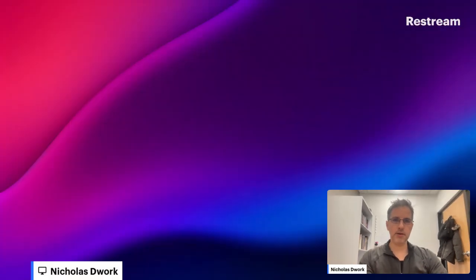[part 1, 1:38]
Good morning. I think we're streaming again. Today we're not going to make huge changes. Today I think we're just going to add in the checks, get ready to make the regularization term a constraint rather than a term in the objective function, and that's all we're going to do, if we get that far.
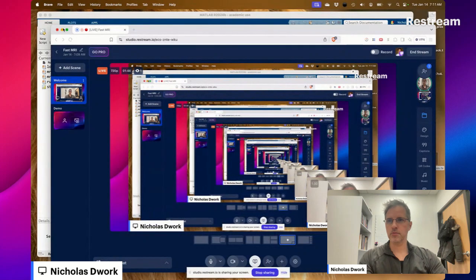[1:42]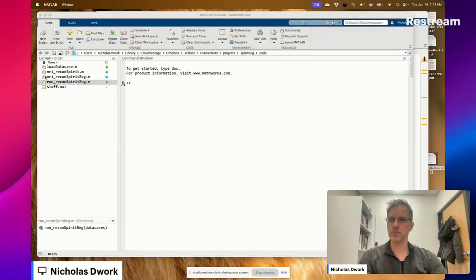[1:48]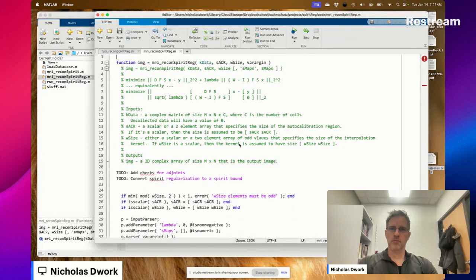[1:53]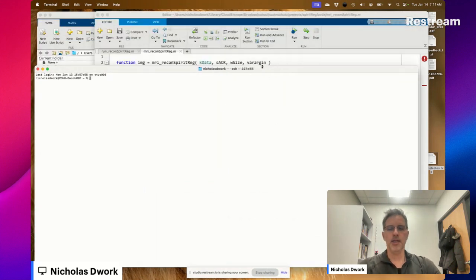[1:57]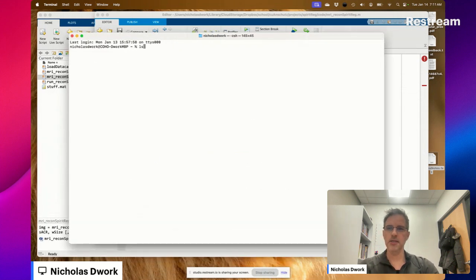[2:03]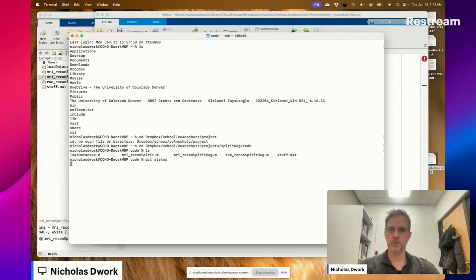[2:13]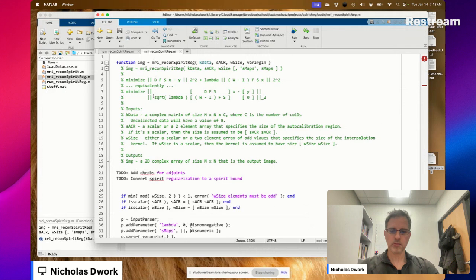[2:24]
So here's, let's make sure, I did want to make sure that I checked in those changes that we've been working on. Okay. They're checked in. So what we're moving to is the following problem. Minimize
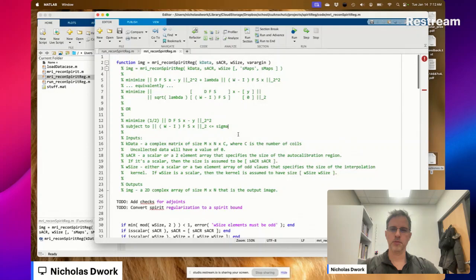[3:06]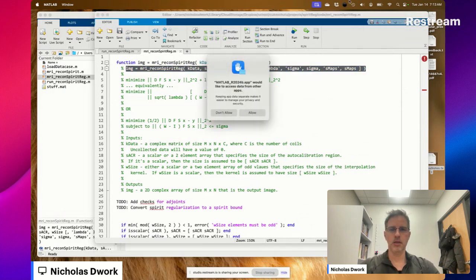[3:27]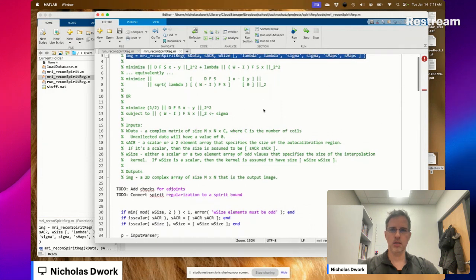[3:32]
Where's lambda? It's a parameter that starts out as 0. Now here, the question is, there's a question with sigma. What's the question? Right now, sigma is set. So it's the L2 norm of all the data in K-space across all coils.
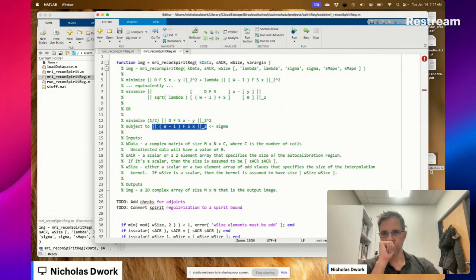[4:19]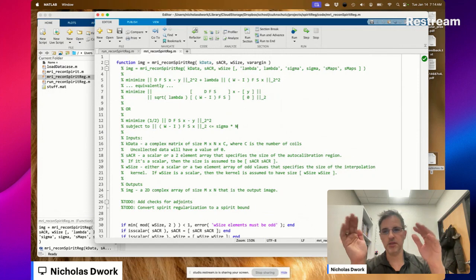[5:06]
So firstly, perhaps we should have a different sigma for each coil. That's a generalization of this optimization problem that I've put here. And maybe we'll do that, but we'll do that later. Secondly, maybe sigma should be a value such that if n were the number of pixels across all coils, then we would multiply sigma by n. I just don't know. We're going to leave it as sigma for now.
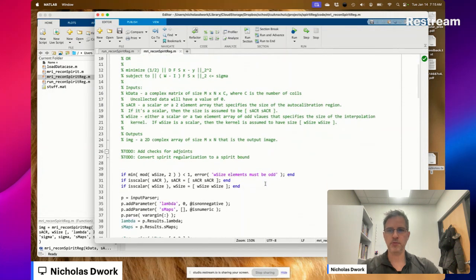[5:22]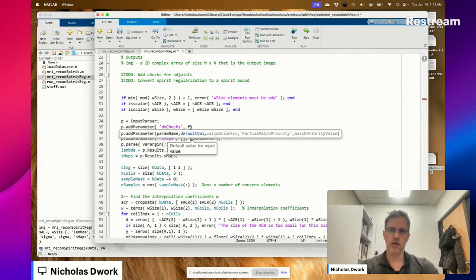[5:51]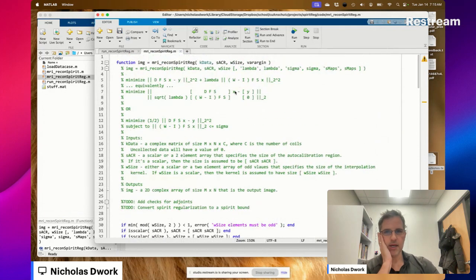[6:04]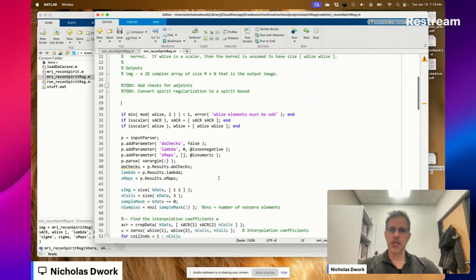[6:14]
So this is what we're working towards. We want to be able to solve this problem. But we're going to start by adding checks in for the adjoints. So let's add that parameter value. Like before in MRI Recon SPIRiT, I'm not going to put do checks in the usage. It's just a hidden parameter that you and I can use and anyone who reads the code can use, but we're not going to advertise it.
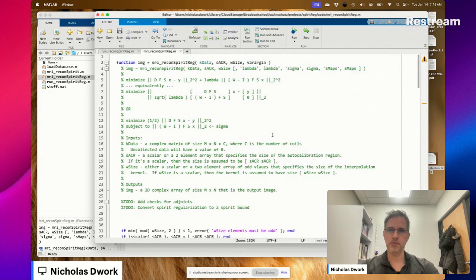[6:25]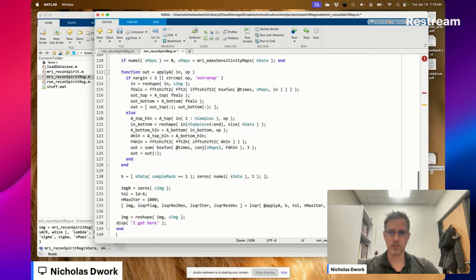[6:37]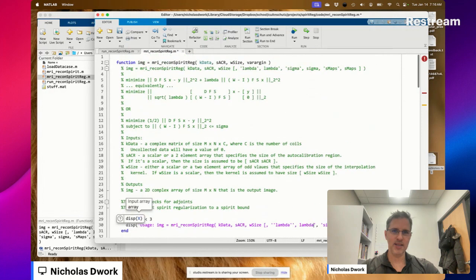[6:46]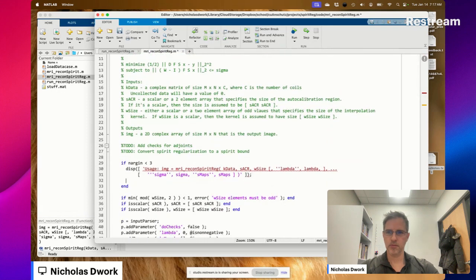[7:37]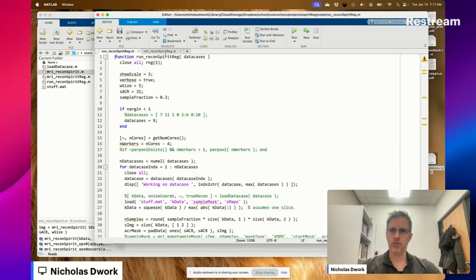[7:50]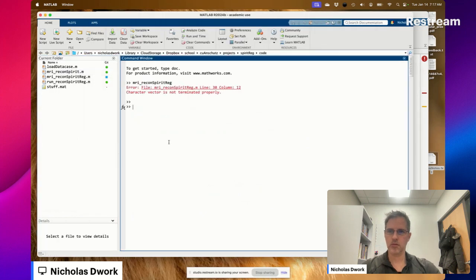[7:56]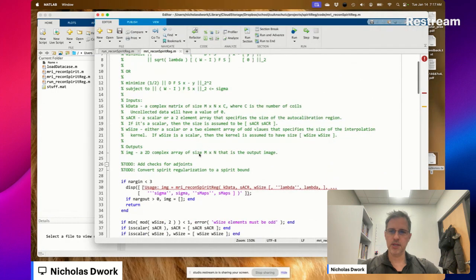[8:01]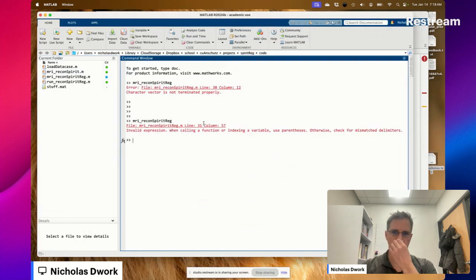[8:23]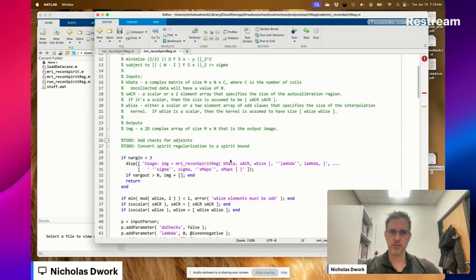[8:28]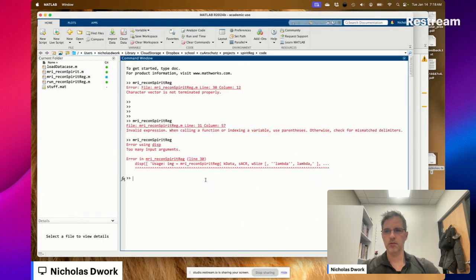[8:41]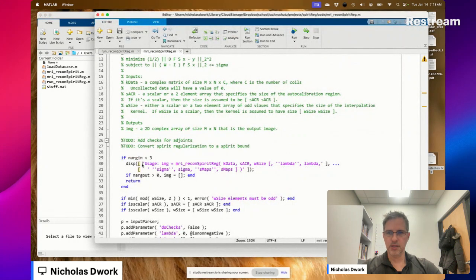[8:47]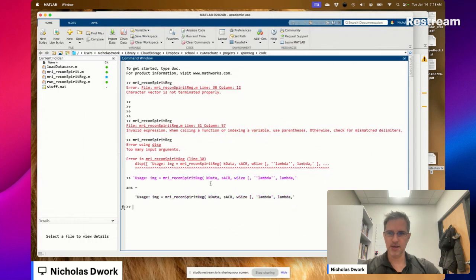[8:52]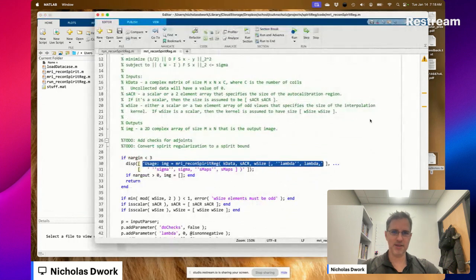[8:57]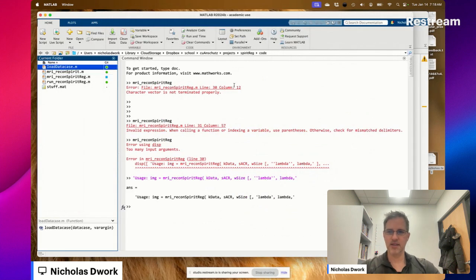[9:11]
I don't know how I went down to the bottom of the page all of a sudden. Character vector is not terminated properly. It's early in the morning, folks. Early in the morning. Too many input arguments. Is this a thing? Okay, that seems to be an actual character array. There we go. Oh boy.
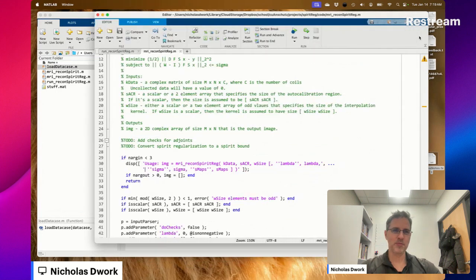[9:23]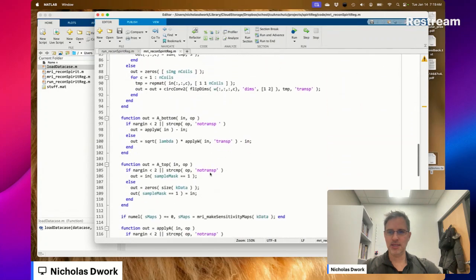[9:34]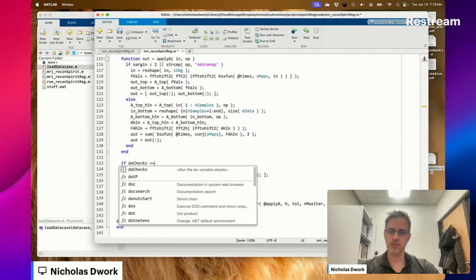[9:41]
Well, we've added some code that we will check in at some point. We've got doChecks here. Let's do some checks. Now you might say, why are we doing these checks? Didn't we see that it was working last time? Well, we saw that it gave a good result, but as we've already seen during these streams, you could get a good result even though the code's not really working, which is scary.
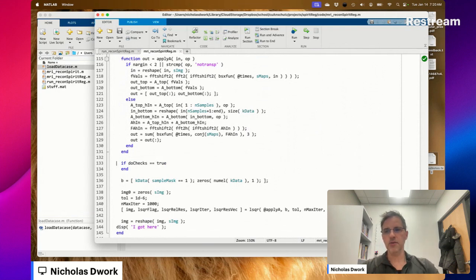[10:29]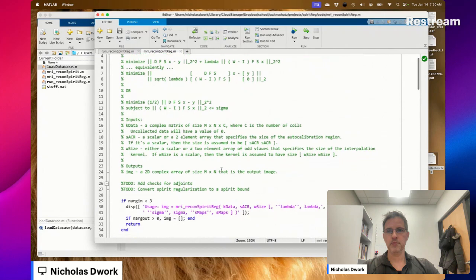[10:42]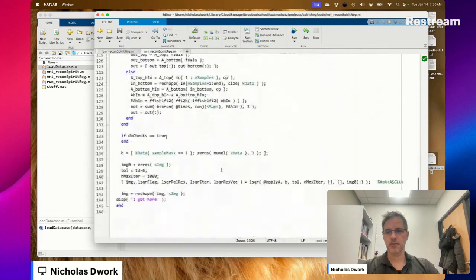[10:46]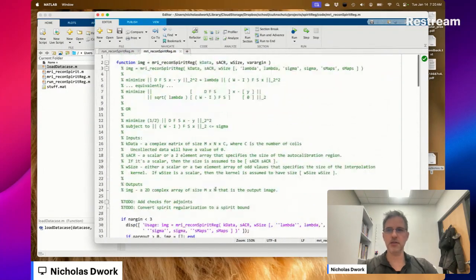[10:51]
So one thing is that do checks is going to help us, it's just a nice thing to do. It takes almost no computation to do the checks. When we're not using it, we turn it off. It's just one if statement. It builds my confidence in this code, my code. And then also we're going to be altering this code substantially. And so when we do that, we're going to want to make sure that these checks are set up and that as we alter the code, the checks keep running and that things keep checking out. That's why we're doing it.
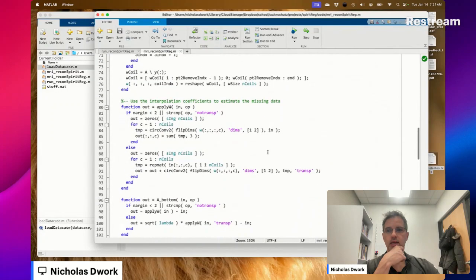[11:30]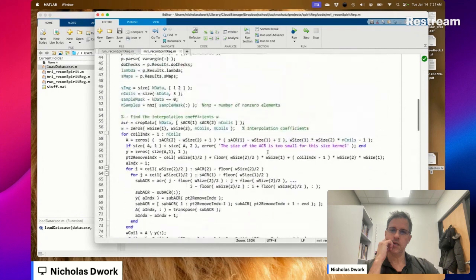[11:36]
Before we do that, I realized last night I want to do this, what I'm about to do now, is closer to what the code is actually doing. The FS is outside here. So this problem is equivalent to this one, and this one that's highlighted now is actually what the code is doing because we have broken this FS out of this block matrix, and it's really this block matrix now that's A, I think. Nope. This is still in A. So A is the block matrix with the FS, and then this is A top, and this is A bottom. So that's good.
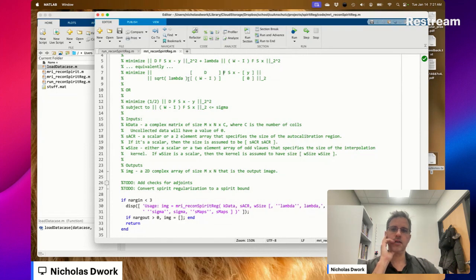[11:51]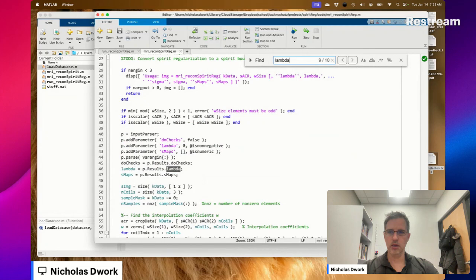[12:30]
The square root of lambda out here makes it seem like we're multiplying the entire block matrix. When we're not really doing that, we're just multiplying what's on the inside. So that's better still. On the inside, on the bottom, we're just multiplying the term on the inside that's on the bottom. Square roots are actually surprisingly expensive. Might as well just calculate it once, store it in memory, and then never do that again.
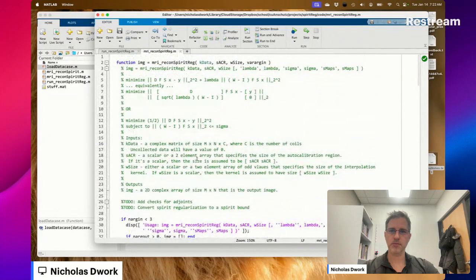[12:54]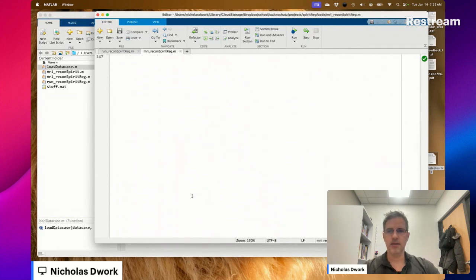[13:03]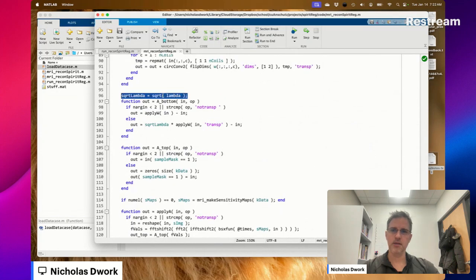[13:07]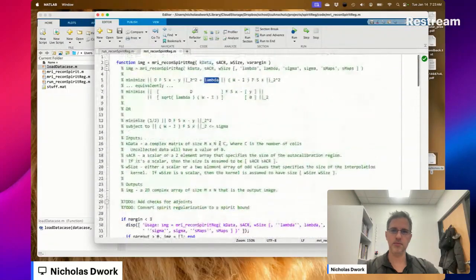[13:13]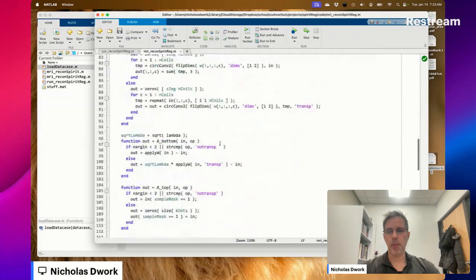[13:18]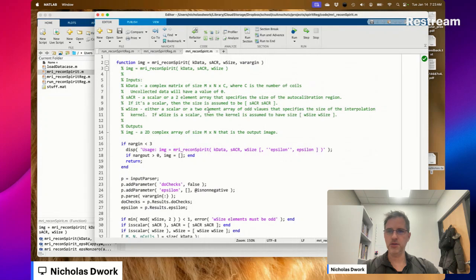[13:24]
All right. You might say, why not just have people pass in square root of lambda instead of lambda? We could do that. These are super fast computers. We're used to thinking about the regularization parameter as lambda, so that's what we're going to do. Okay. Back to do checks. So we've got do check for W. Do we have an SK data? I forget. No.
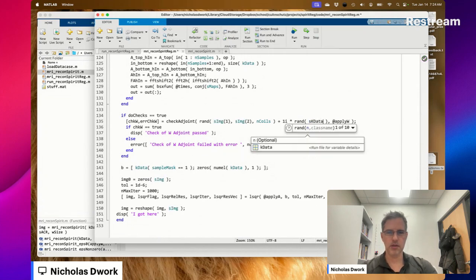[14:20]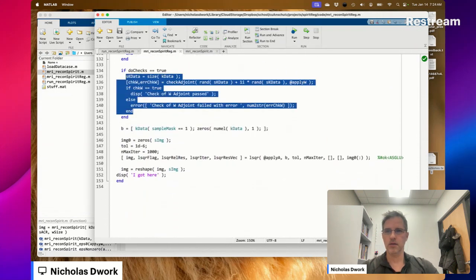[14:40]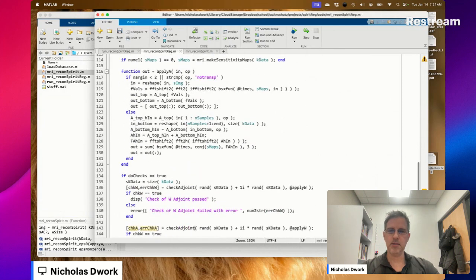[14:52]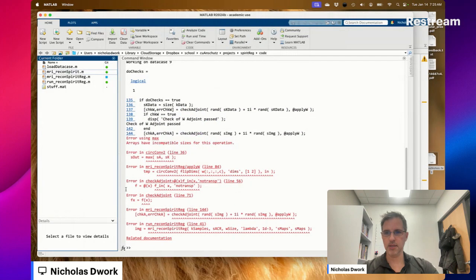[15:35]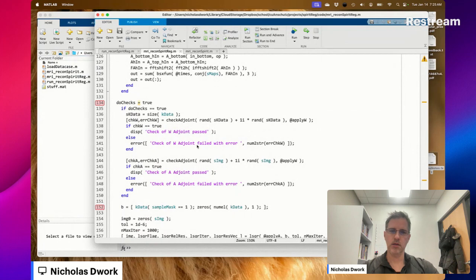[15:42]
What does A accept? A accepts S, which is size image. Does do checks work? That passes, that crashes. Failed. Looks like we've got a bug, doesn't it?
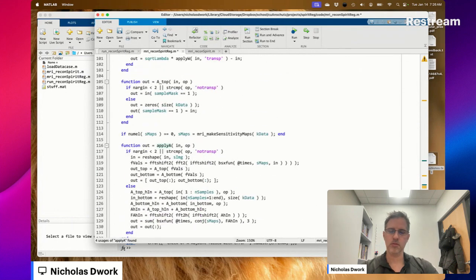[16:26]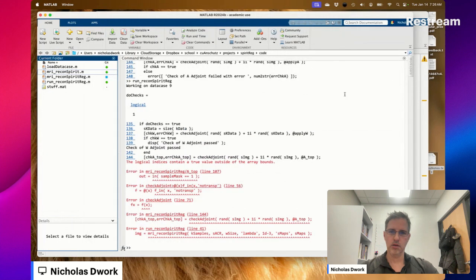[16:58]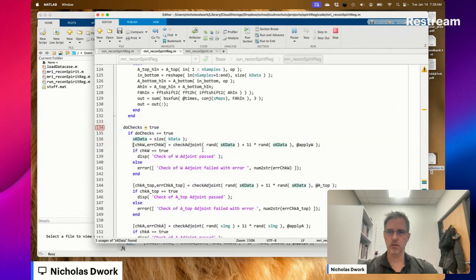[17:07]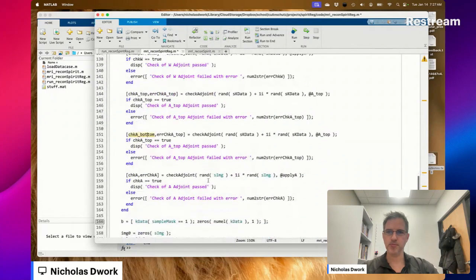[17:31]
Okay, A top passes. Let's check A bottom. What we're doing here, of course, is checking whether the individual parts of A pass. And this is going to help us figure out where in this code the error is. I expected A top to pass. It's really a small amount of code, right? It's just the sample mask.
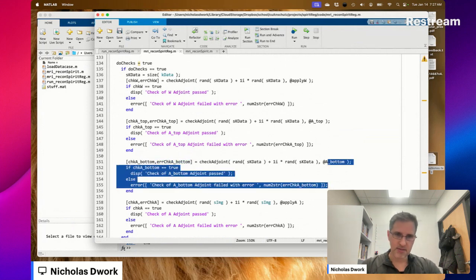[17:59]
Doing that in Vim is very nice because you could just say find and replace anywhere you see a pattern on a specific set of lines. So that would have been very much easier in Vim.
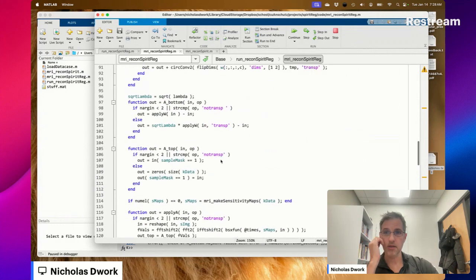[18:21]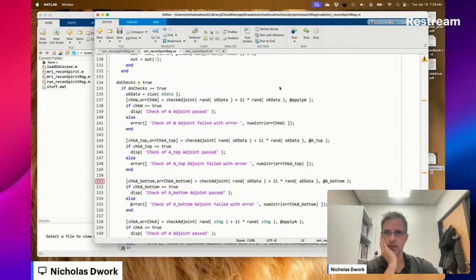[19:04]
Adjoint of bottom failed because square root of lambda is not in both. Still fails? A significant error, okay. W passes. Right? W passes. A bottom is this matrix, square root of lambda times W minus I. A bottom is equal to square root of lambda times W minus I.
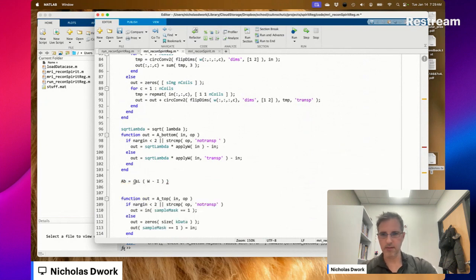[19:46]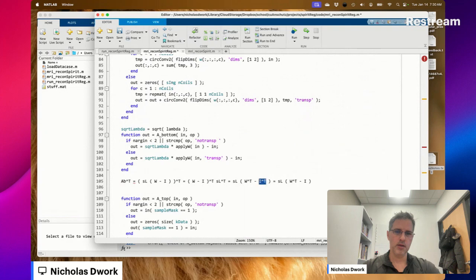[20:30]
Let's take the adjoint of all of that. W minus I adjoint times square root of lambda adjoint. Square root of lambda is a scalar, so a number is its own transpose. The transpose of I is itself. I is an easy matrix, it's just symmetric, okay? So if out is equal to square root of lambda times this, times in, then A bottom transpose times in should be this. And we already know that applyW passes, so the problem should not be here. Well, that's a mind bender.
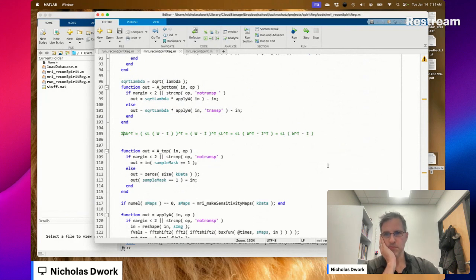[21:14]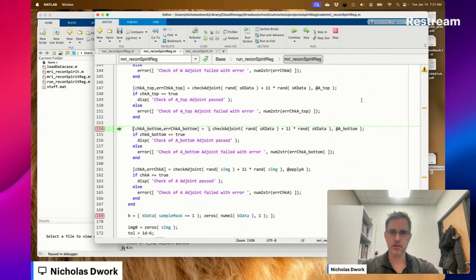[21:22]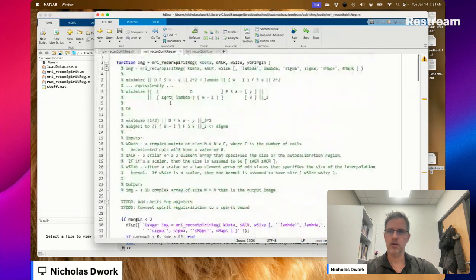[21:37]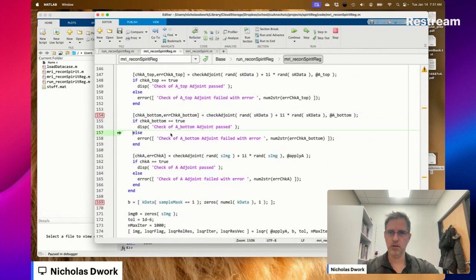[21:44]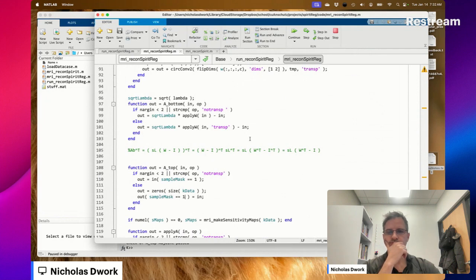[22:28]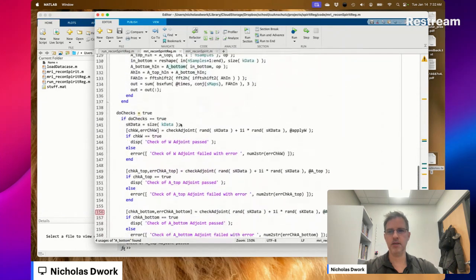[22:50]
That's strange. Same error. Lambda's small, right? Lambda's 1 times 10 to the minus 3. Oh, it's not that small because it's square root of lambda. Okay. Let's make sure the issue is not with the square root of lambda. I'm just checking if the adjoint of A bottom without lambda is correct. Nope, still fails. So it has nothing to do with lambda. Let's keep going.
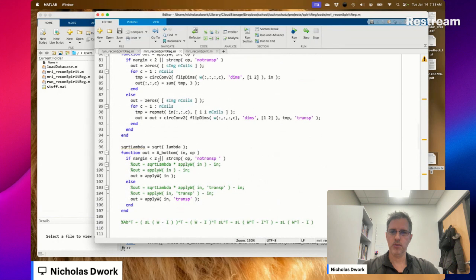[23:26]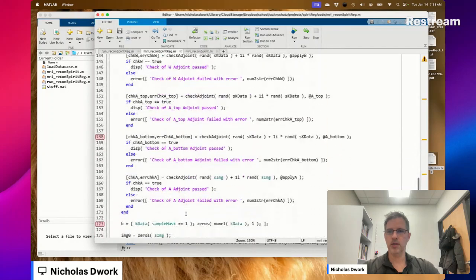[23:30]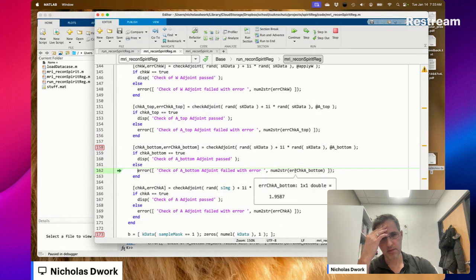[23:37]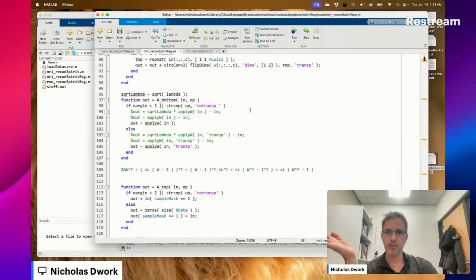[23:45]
Now, if I take away the minus in, this is just apply W, which is already checked. Let's see if that passes. This should pass, right? It fails? How's that possible? A bottom now is just apply W, right? That is surprising.
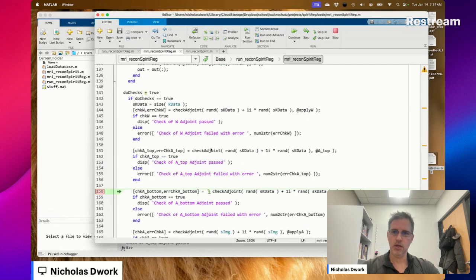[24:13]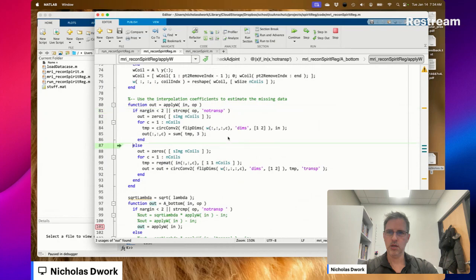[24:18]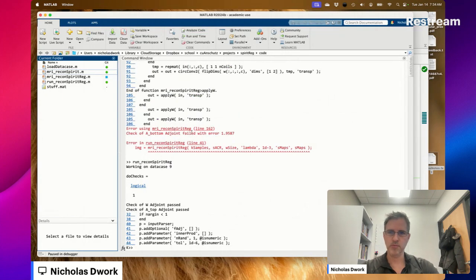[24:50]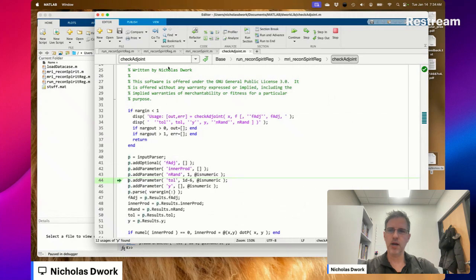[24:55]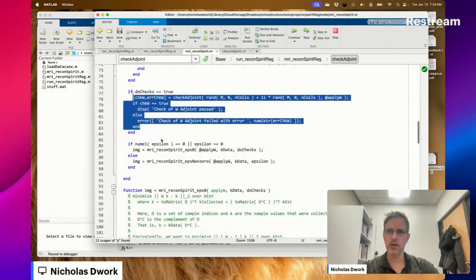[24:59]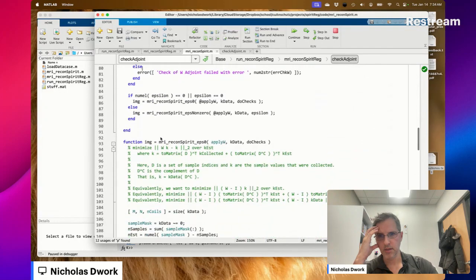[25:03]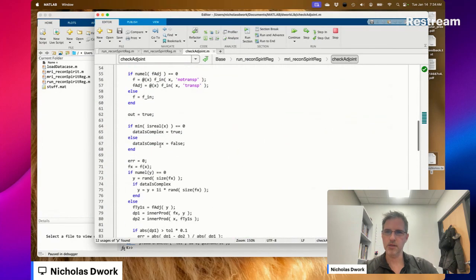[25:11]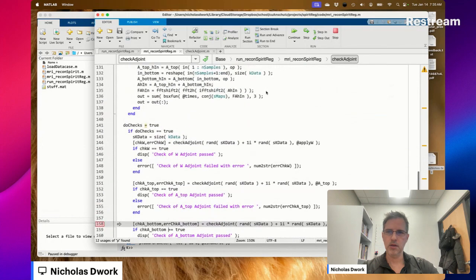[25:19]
Wow, it never got to apply W. It only did the adjoint. What on earth is happening? I have no idea right now, but it looks like the issue is going to be somewhere in here. Why didn't it ever get to an A bottom? Where is A bottom? Oh, I'm in SPIRiT. In A bottom, it never once does the no transpose operation.
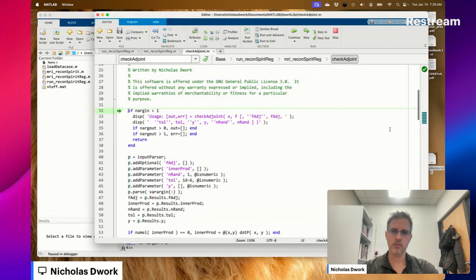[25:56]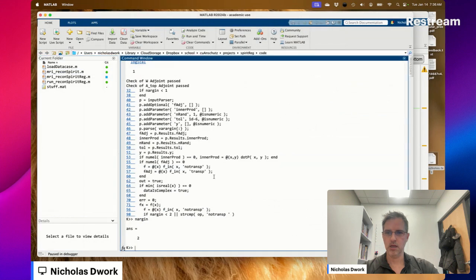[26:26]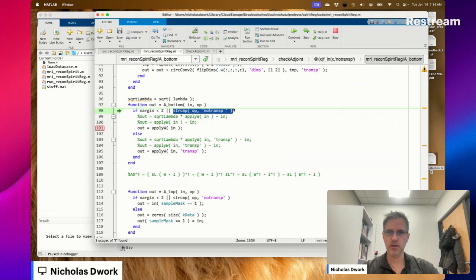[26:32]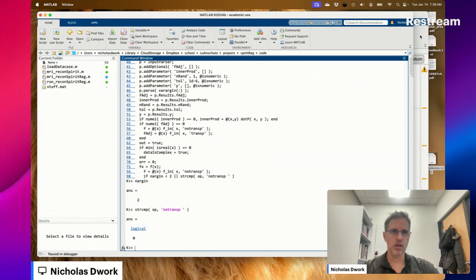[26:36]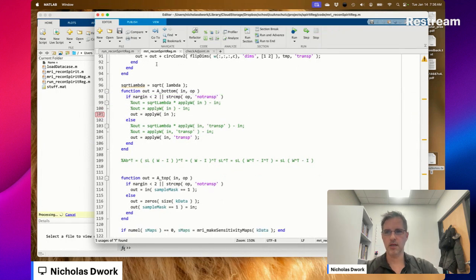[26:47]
Where's the F? F should be A bottom, no transpose. So here, I believe it should go into the no transpose operation. nargin is 2, and op is no transpose. Logical 0. Oh my gosh. Did you guys see that space? That space right there was what was causing the issue.
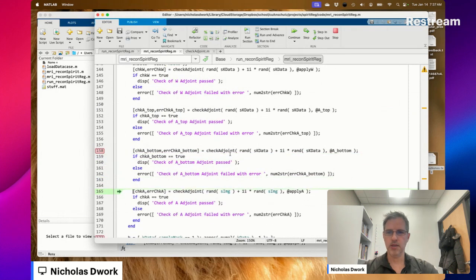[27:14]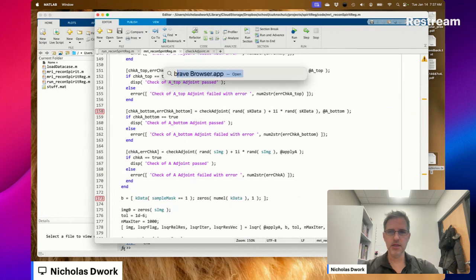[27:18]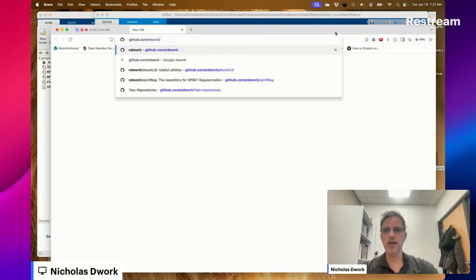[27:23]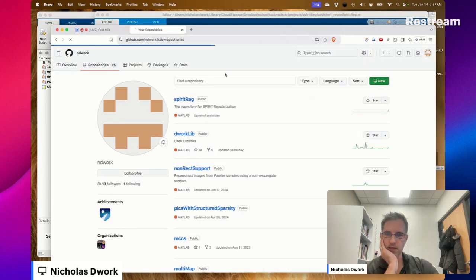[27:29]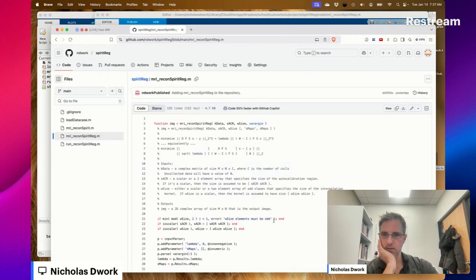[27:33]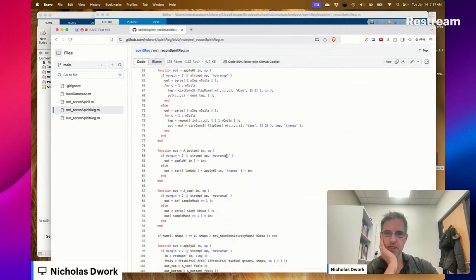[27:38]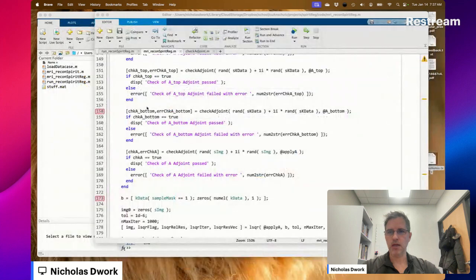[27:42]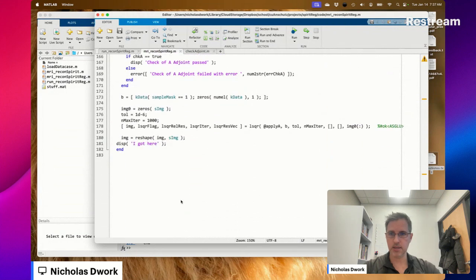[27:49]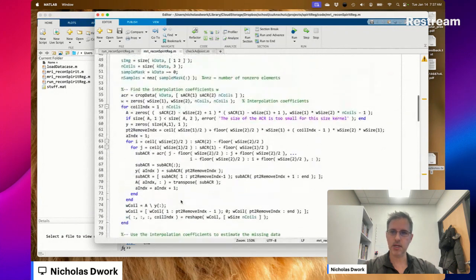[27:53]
All right, let's see if that passes now. Let's see if A passes now. Yeah, okay, great. Here's a question. Was that actually in the code? Did we commit that, or did I introduce that space sometime recently? Nope, it was there since yesterday. Okay. How did this work at all? That's why we do checks. How on earth did this work at all?
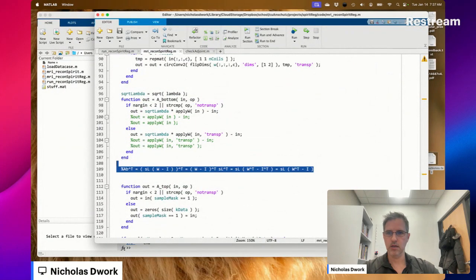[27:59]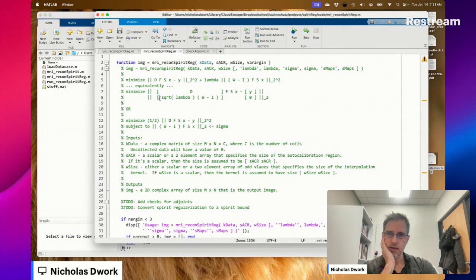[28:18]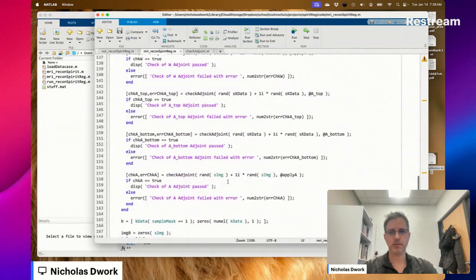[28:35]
Is there some mathematical equivalence thing that I don't see? And that's how all of this works, even when I totally mess it up? Like, is A bottom symmetric? No, if it were symmetric, then the adjoint check would have passed. And it's not symmetric because W is not symmetric. How on earth did this work at all?
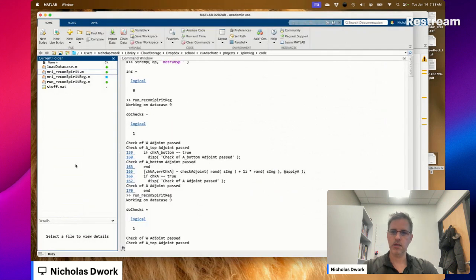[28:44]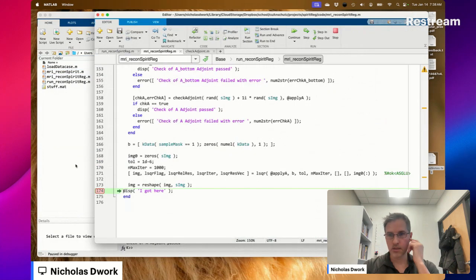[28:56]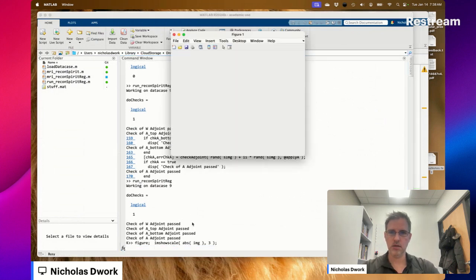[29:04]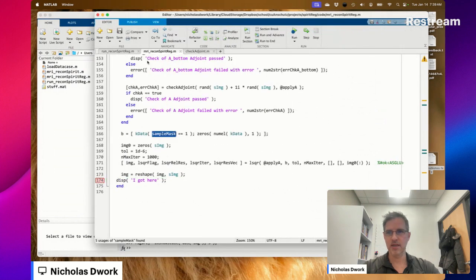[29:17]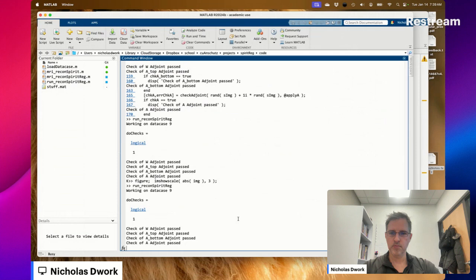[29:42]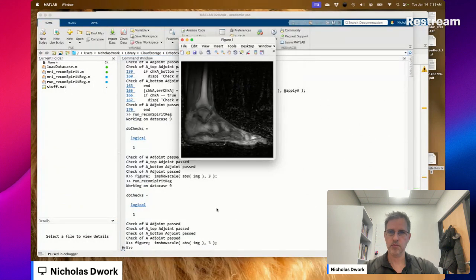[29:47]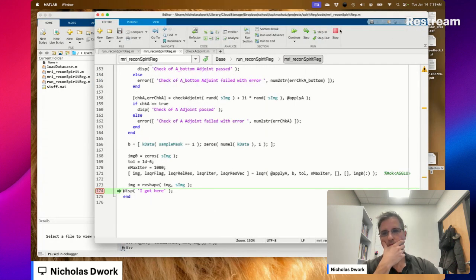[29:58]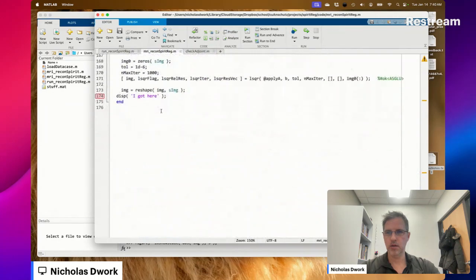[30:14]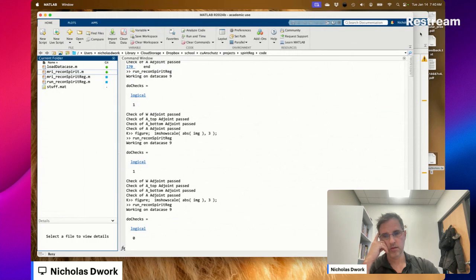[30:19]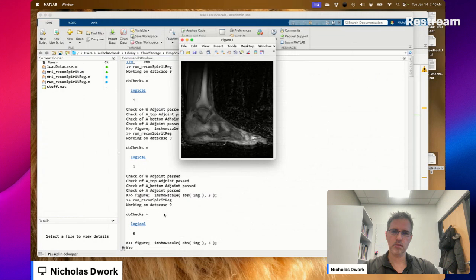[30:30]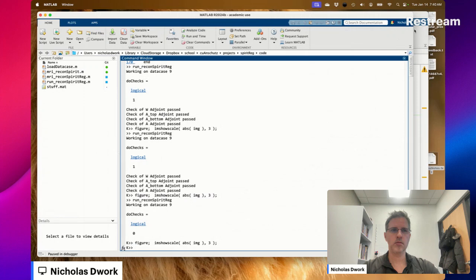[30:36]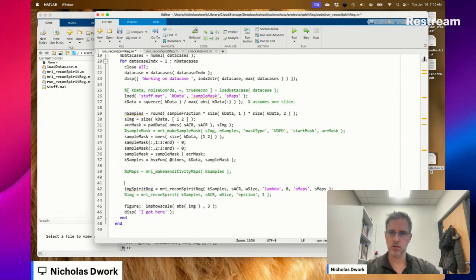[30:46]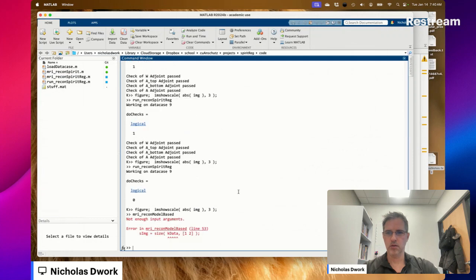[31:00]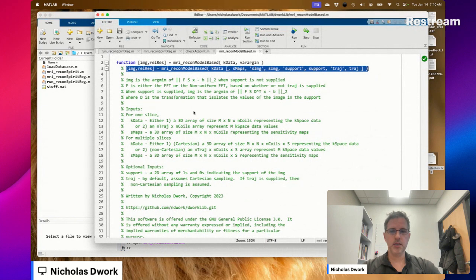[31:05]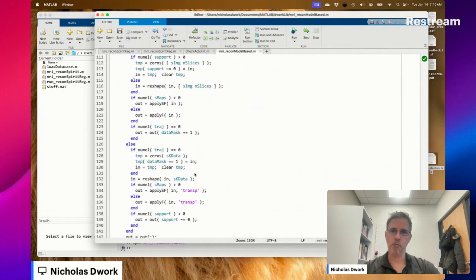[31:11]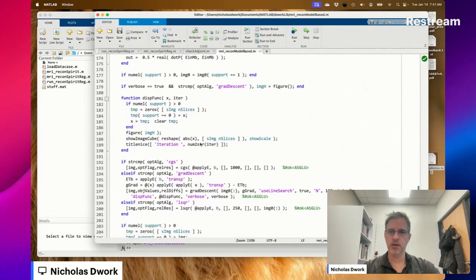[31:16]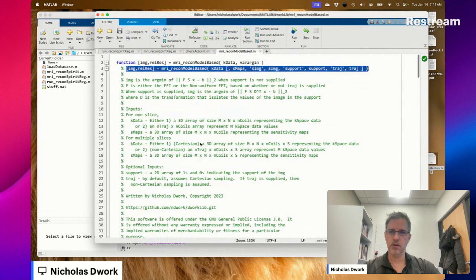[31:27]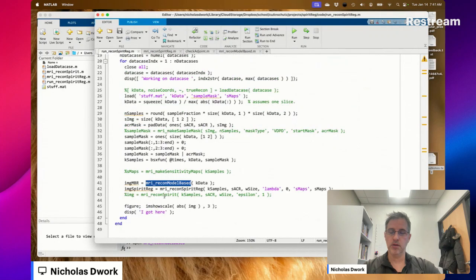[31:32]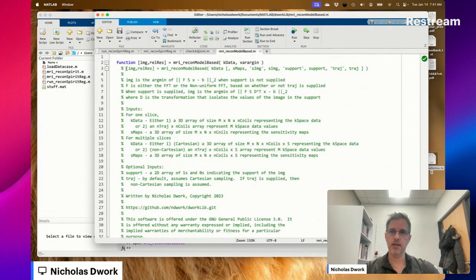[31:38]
Hopefully the image is as good. Nope. That image is pretty bad, isn't it? Let's pass in a lambda of 0. So that should just be model-based reconstruction. This is a code that just does model-based reconstruction. It should be doing the same. So apparently we don't have a usage for this thing, so let's add that.
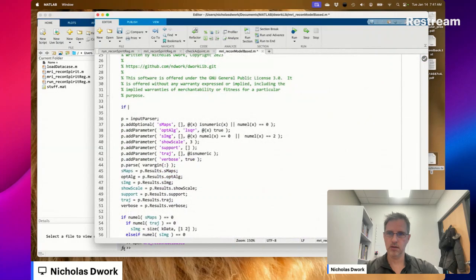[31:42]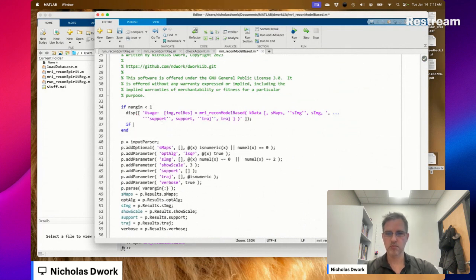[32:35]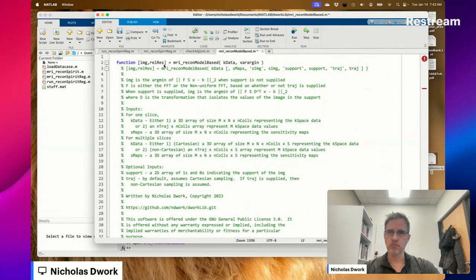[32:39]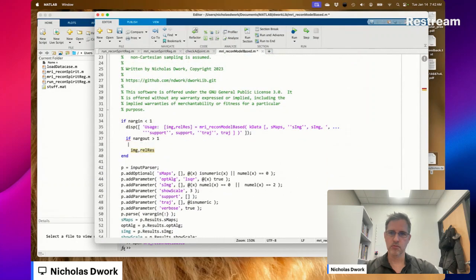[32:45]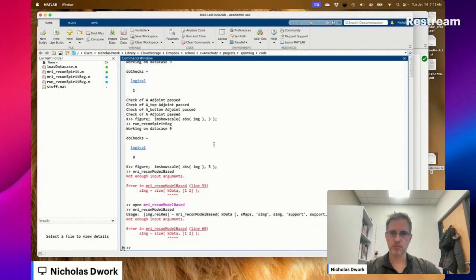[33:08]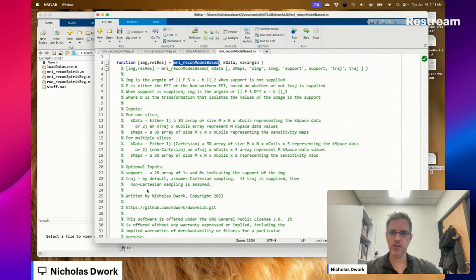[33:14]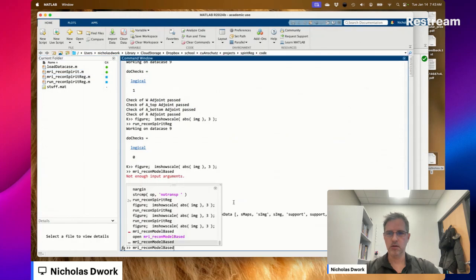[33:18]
Not enough input arguments. All right, we got the usage. Great.
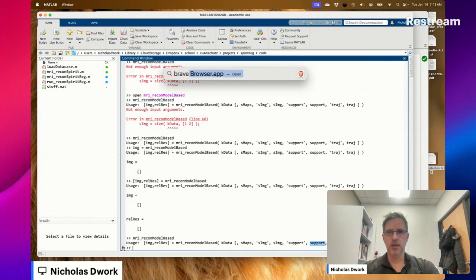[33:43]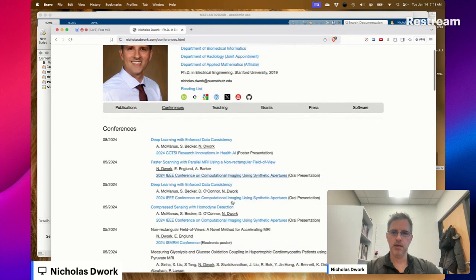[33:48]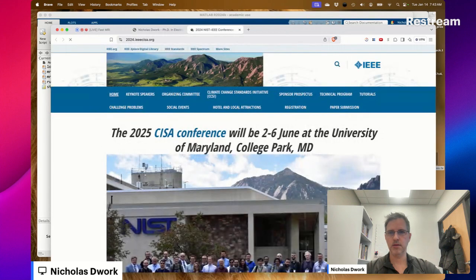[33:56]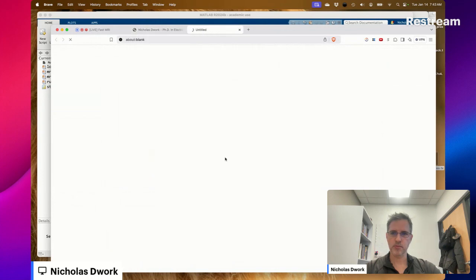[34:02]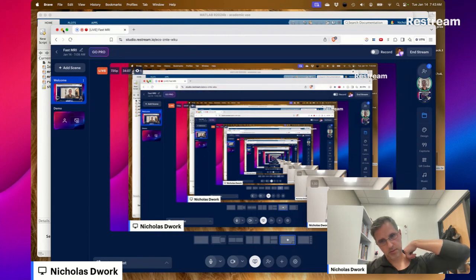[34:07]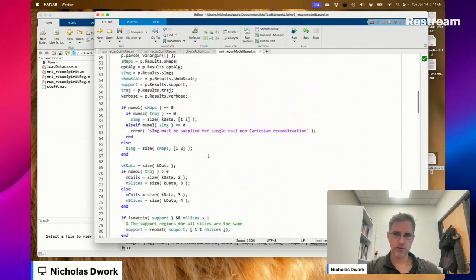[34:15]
Oh, that's interesting. I set it up so you could pass in the support. If you're interested in that, I have these conference papers on non-rectangular fields of view. It's presented here. Okay, but we're not doing that today. So that would be fun for a future thing.
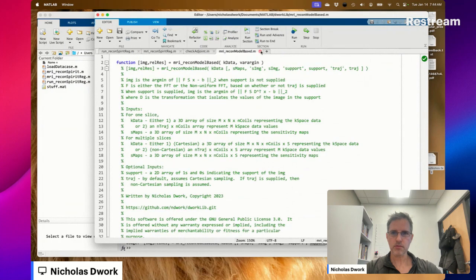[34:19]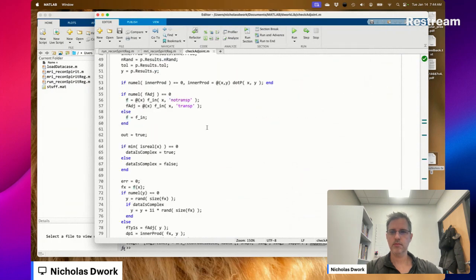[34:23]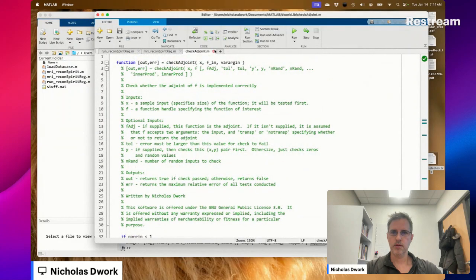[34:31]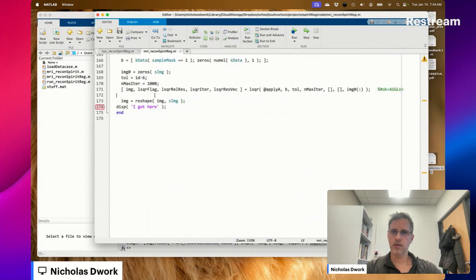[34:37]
So now I'm going to ask model-based reconstruction to give me back an image. I'm going to ask this new SPIRiT reg with a lambda equals 0, which includes no regularization, to give me an image, and then I'm going to show them both, and we're going to see if they look the same or not.
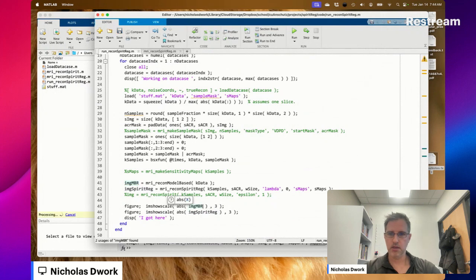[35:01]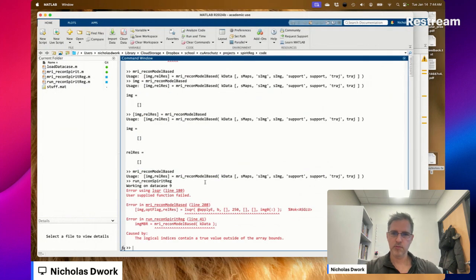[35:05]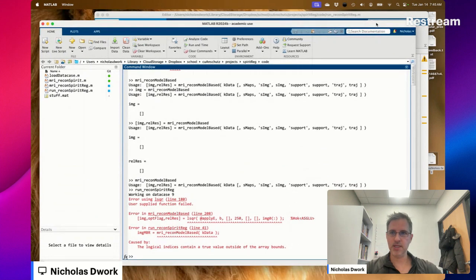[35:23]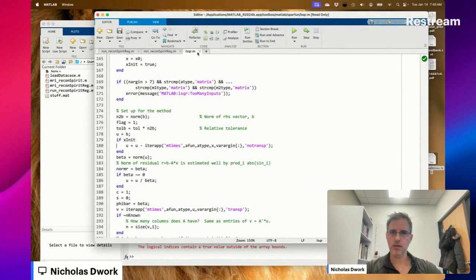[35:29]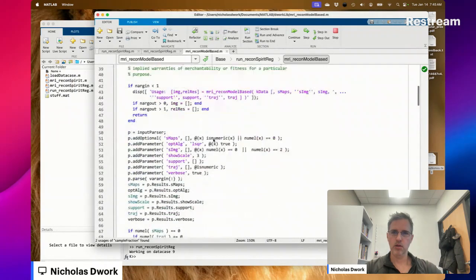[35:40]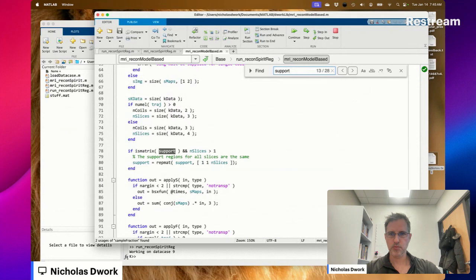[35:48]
LSQR function failed. The logical indices contain a true value outside of the array bounds. There's a problem when you rely on codes that have bugs on them, isn't there? Let's do checks.
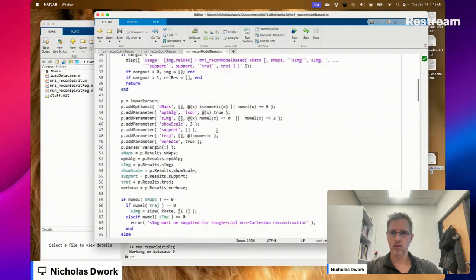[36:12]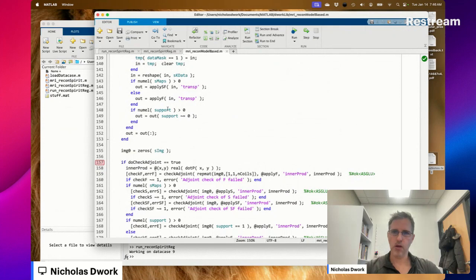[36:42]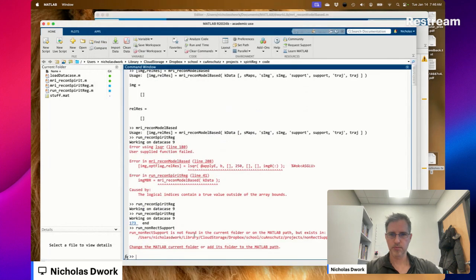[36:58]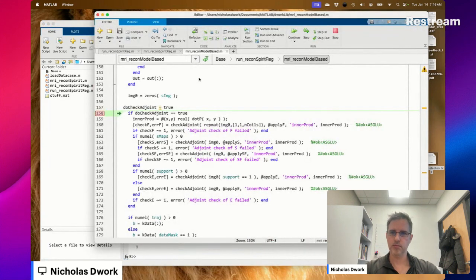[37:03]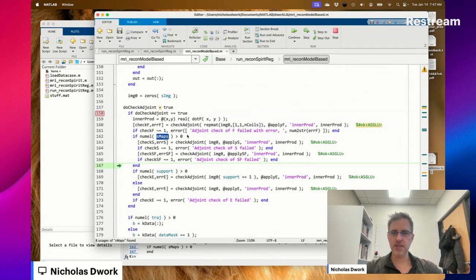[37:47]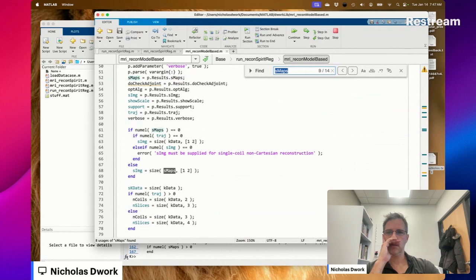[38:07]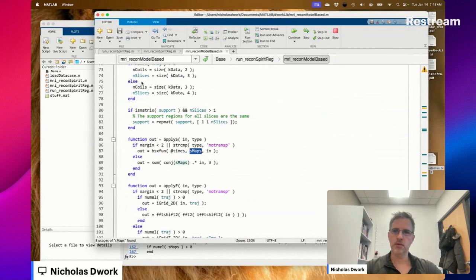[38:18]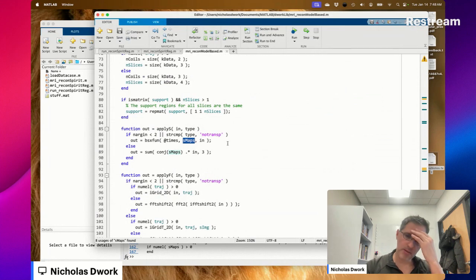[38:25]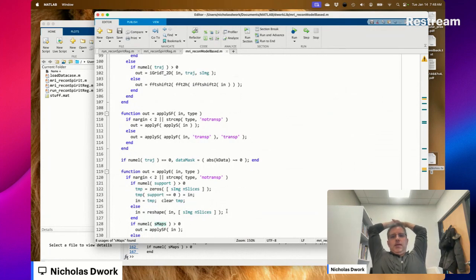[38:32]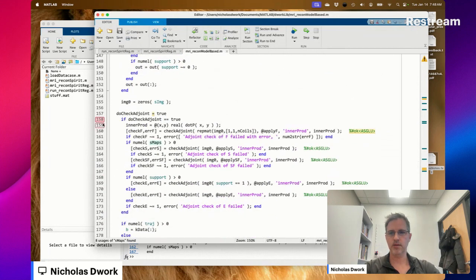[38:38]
What happens if you don't pass in the sensitivity maps? Huh. What happens if you don't pass in the sensitivity maps? That's the bug. That is the bug right there. We've got multiple coils of data. We're doing model-based reconstruction, but we're not passing in sensitivity maps, and that's the issue. So I think there needs to be a check.
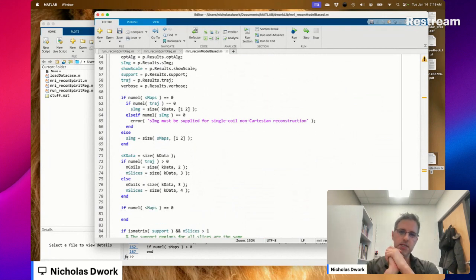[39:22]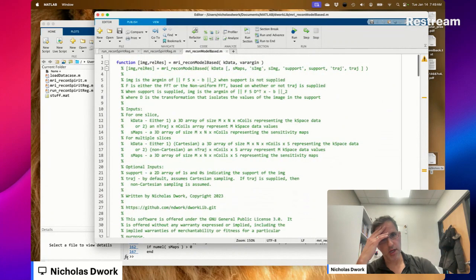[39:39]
I think there needs to be a check to ensure that if you're passing in multiple coils of data, then you're also passing in sensitivity maps. Why would you do a model-based reconstruction without sensitivity maps? What does that even mean? Well, it's because of this support. You could do a model-based reconstruction, which is solving this problem, and not have sensitivity maps, which is just assuming that the sensitivity map is I with a single coil when D, where D is the support matrix.
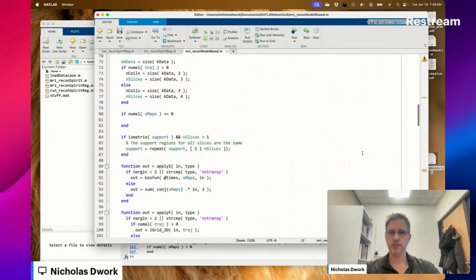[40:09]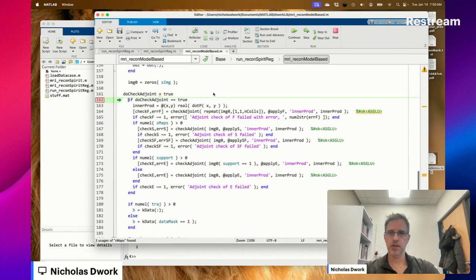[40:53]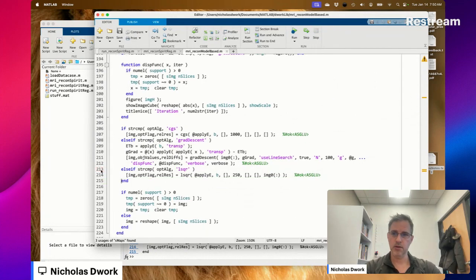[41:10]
So if n coils is greater than 1 and the number of sensitivity maps is 0, then that's an error. You must pass in S maps when n coils is greater than 1. I think that's going to be the issue. Yeah. Now LSQR runs just fine. Right, so that was the issue. Okay.
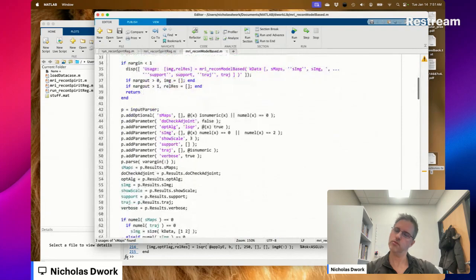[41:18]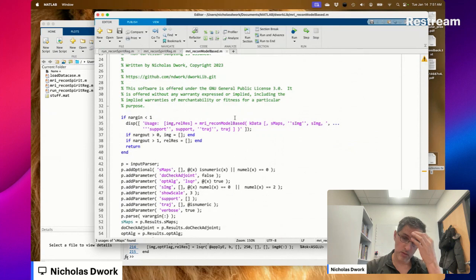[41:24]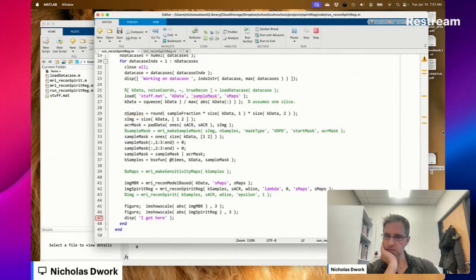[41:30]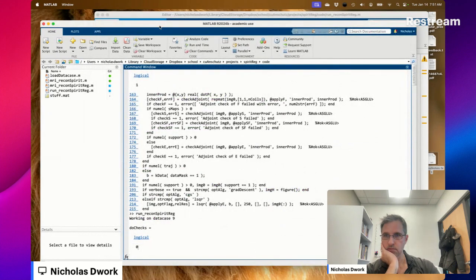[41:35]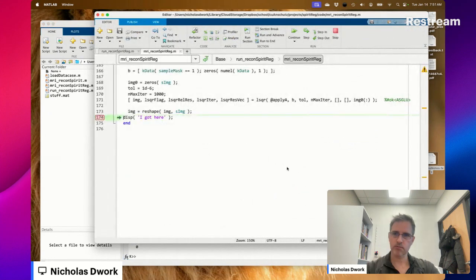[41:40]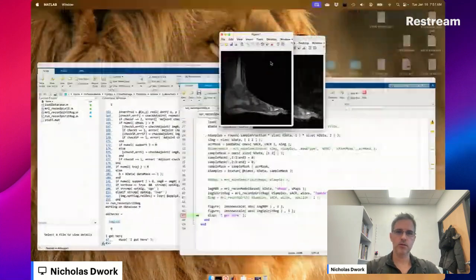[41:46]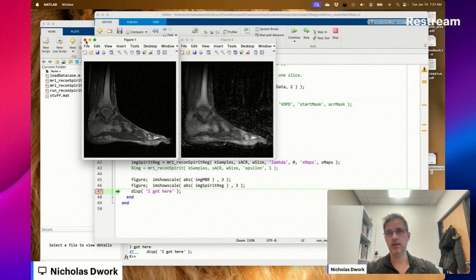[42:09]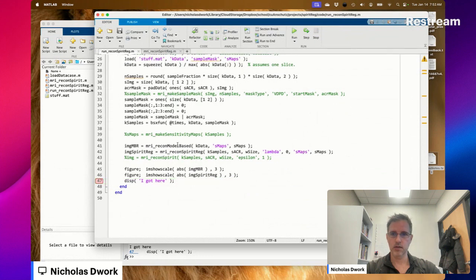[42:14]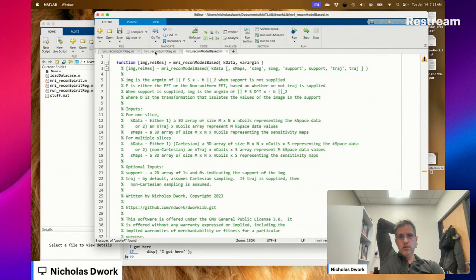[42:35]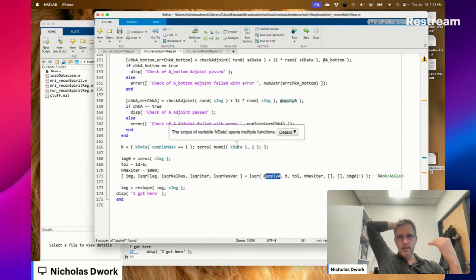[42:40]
Let's see if these images look similar. They don't. These two codes are supposed to be doing the same thing, and they're not. This is outputting something good, and this is outputting something bad. And the adjoints pass. One way to solve this would be to launch 2 instances of MATLAB and step through this code one step at a time, making sure that each line produces the same thing. And that's maybe what we're going to have to do.
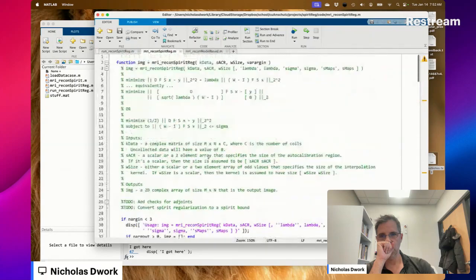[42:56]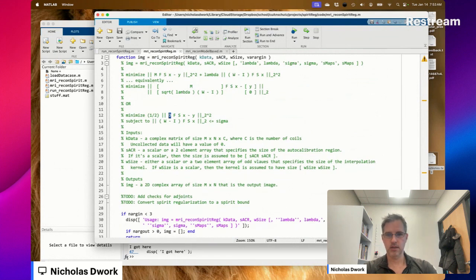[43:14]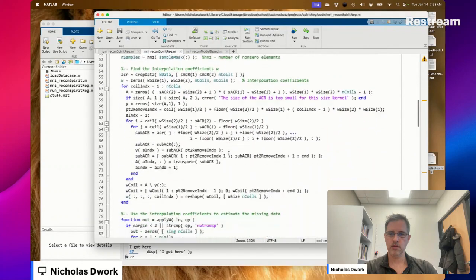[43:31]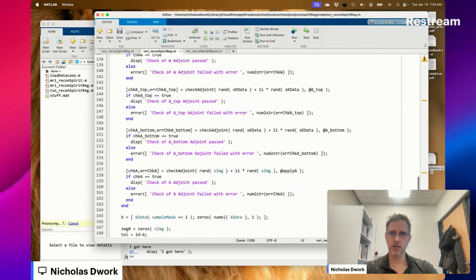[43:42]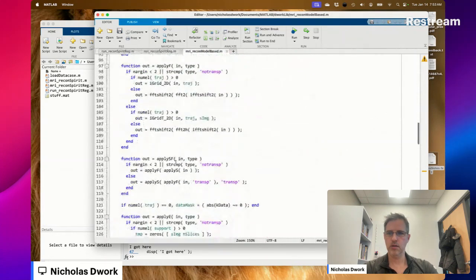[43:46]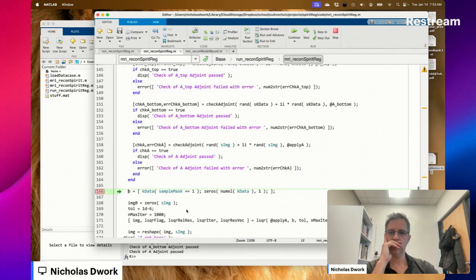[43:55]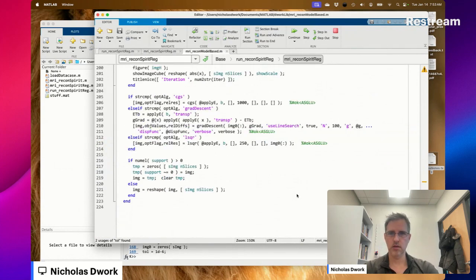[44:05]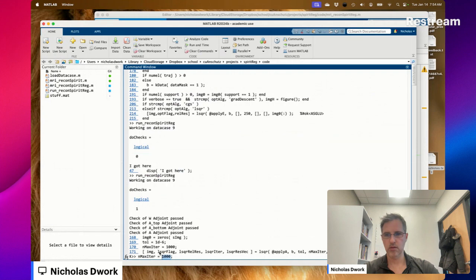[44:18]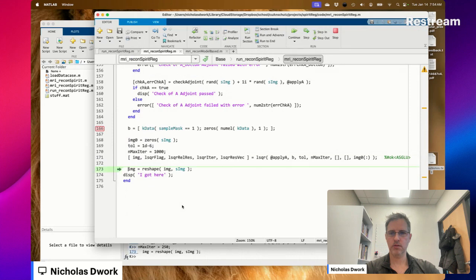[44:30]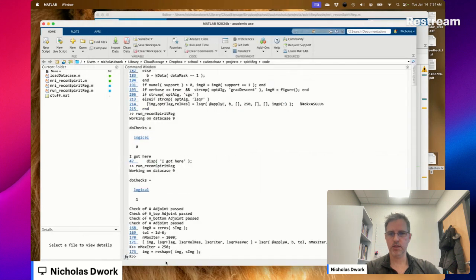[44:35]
D here is what? That's the sample mask. Let's make this M, since D is the support matrix on the other code. Okay, all the do checks pass. Succeeded.
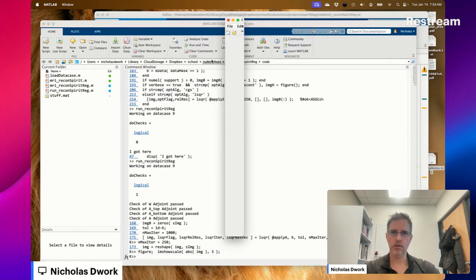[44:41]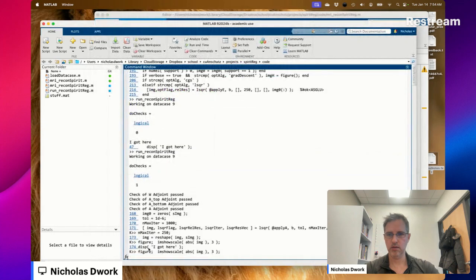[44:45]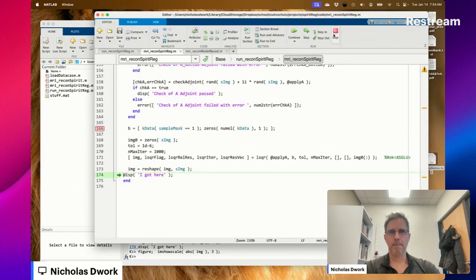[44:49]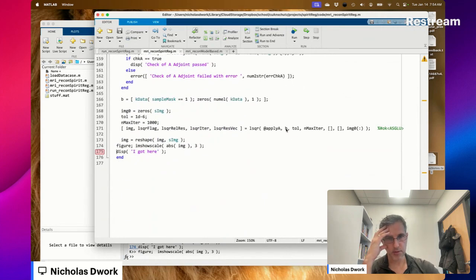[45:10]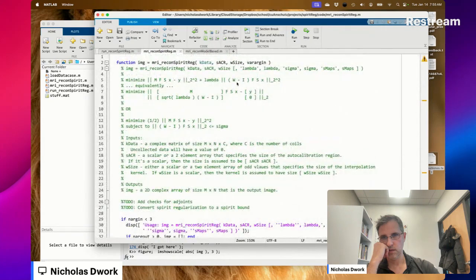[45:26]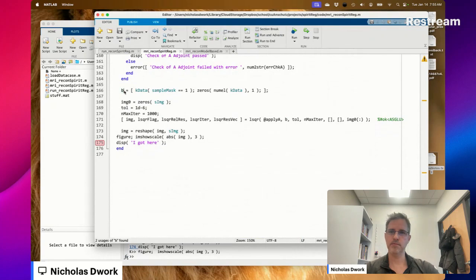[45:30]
Right. Let's just see if we can figure this out. I mean, like before, there are only two places where there could be a problem: B and apply A. This should be Y. I don't know why I called that Y anymore. Why did I call that Y?
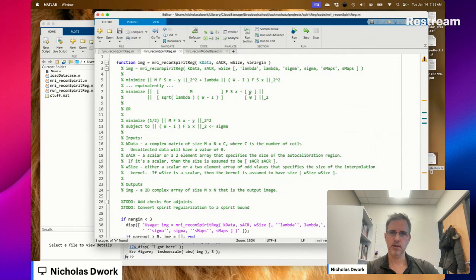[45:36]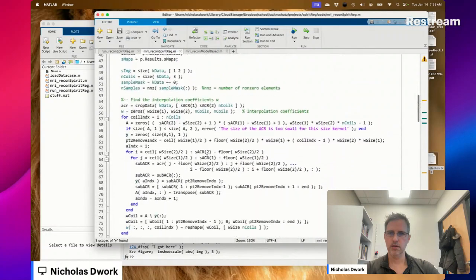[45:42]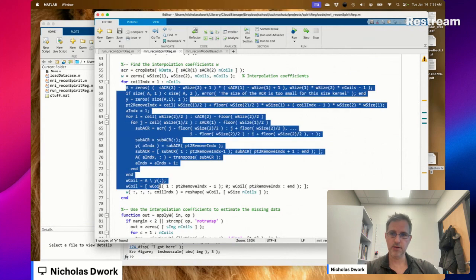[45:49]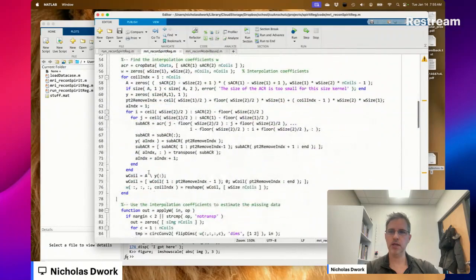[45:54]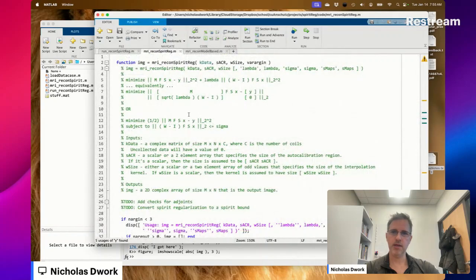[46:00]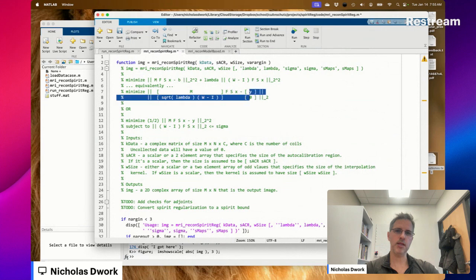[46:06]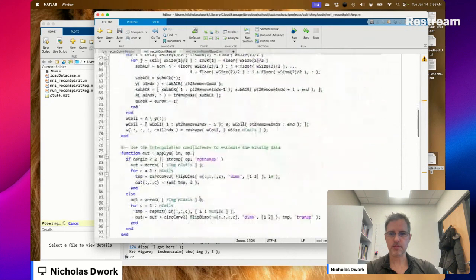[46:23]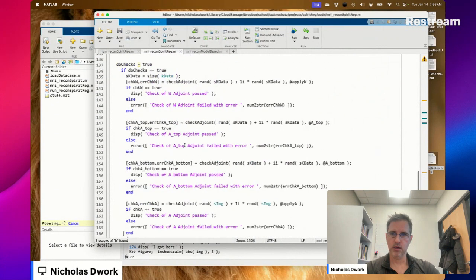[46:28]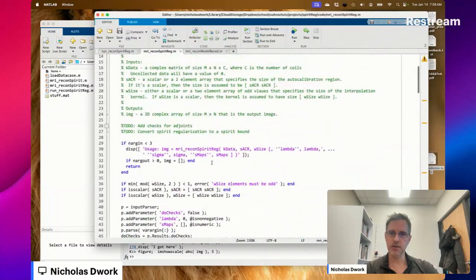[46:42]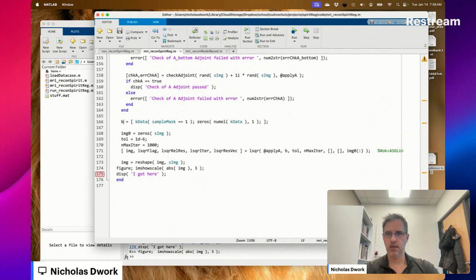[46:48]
Because there's this A up here for finding W? I don't know. Maybe so. Yeah, because there's going to, oh, that's why. Oh my goodness. Let's call this B. Oh no, because I'm calling this block matrix here B. But I can't call this Y. I'm going to call it B. Now I need to make sure that this is Y. Is that the issue? I would think not. B compound. Well, is it too much of an abusive notation to call this thing B when I was calling this B earlier? We're just going to go with B for now.
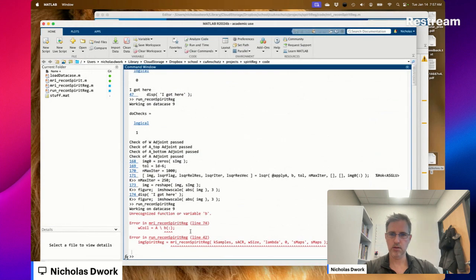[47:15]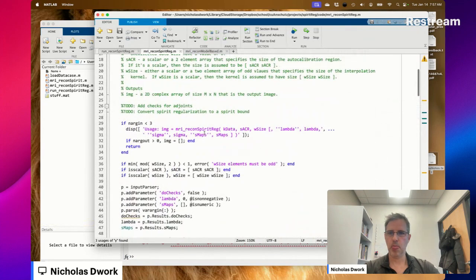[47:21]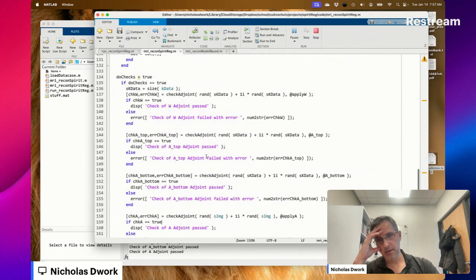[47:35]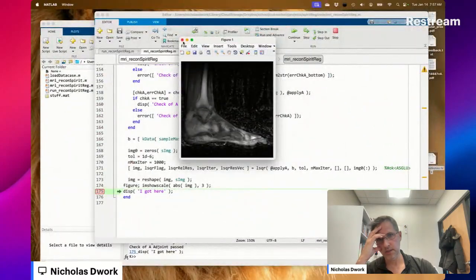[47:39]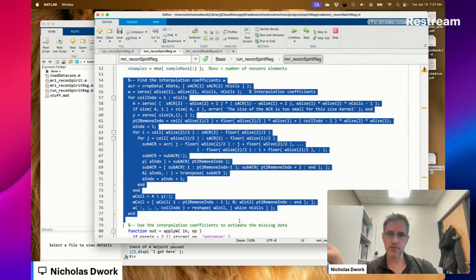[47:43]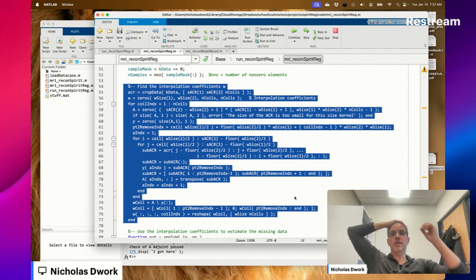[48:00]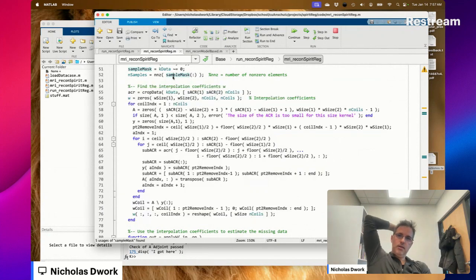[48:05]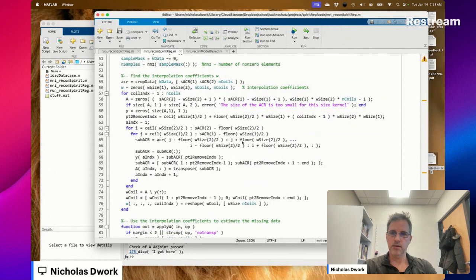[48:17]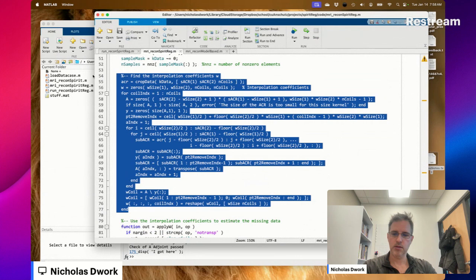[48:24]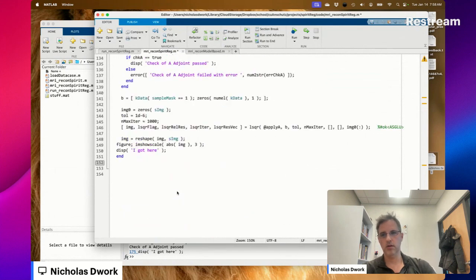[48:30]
Maybe the thing to do, yeah, that wasn't the issue, is to break this out into its own function so that there are no more of these conflicting names in scope. And it wouldn't be unreasonable to break it out into its own function if indeed we're going to use it for both recon spirit reg and recon spirit. Right now we're going to put it in this code here.
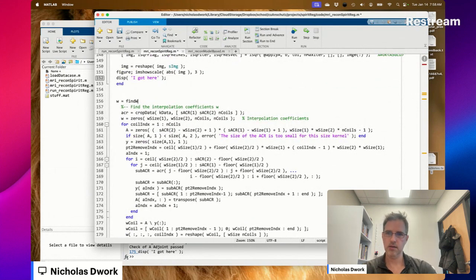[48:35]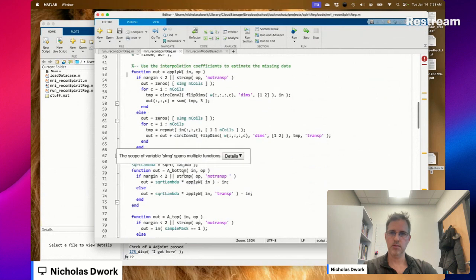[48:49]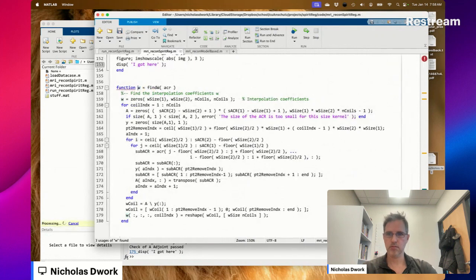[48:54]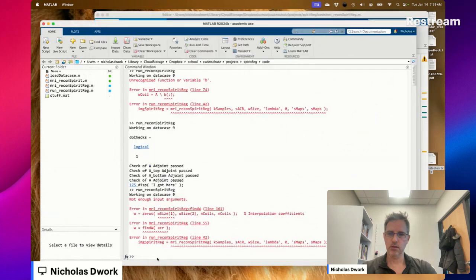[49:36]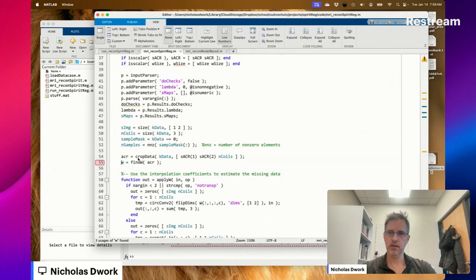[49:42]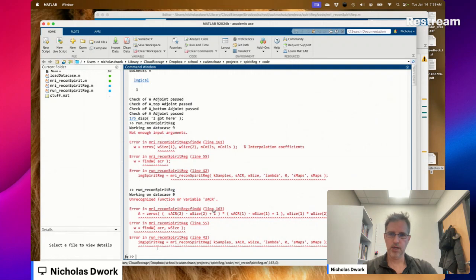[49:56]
Looks like it's going to take the auto calibration region. And W size and coils equals size ACR 3. Is that all we need? Let's see if that works. Not enough input arguments. Why not? Oh. SACR.
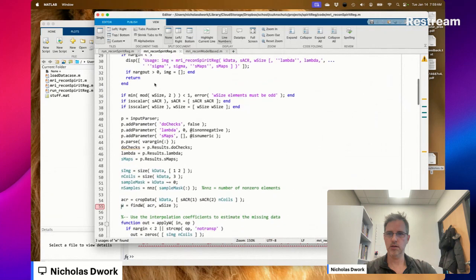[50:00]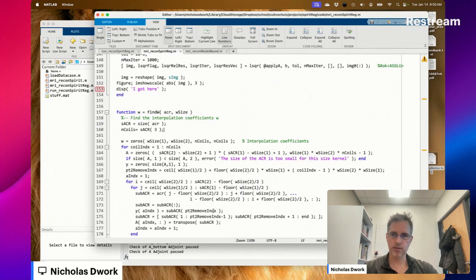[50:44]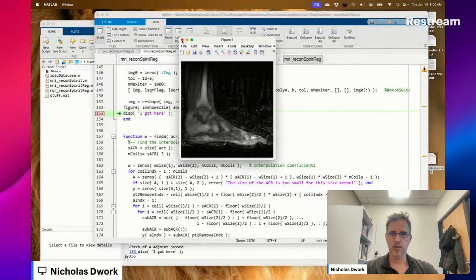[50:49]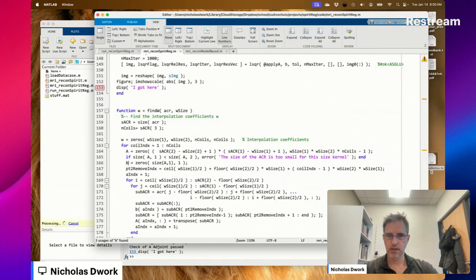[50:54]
Looks like we found W. Okay. Now I can make this B as was always intended. We're solving AX equals B here, or actually AW equals B. As long as we're doing this, you make progress when you can, where you can.
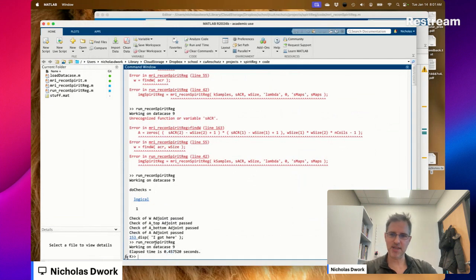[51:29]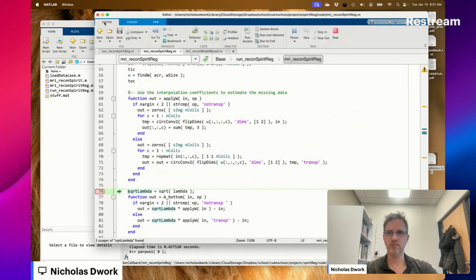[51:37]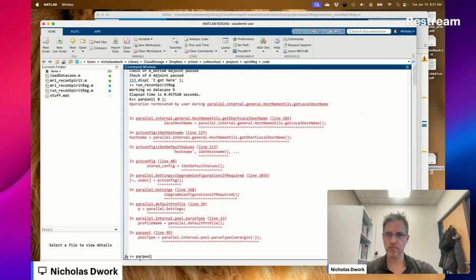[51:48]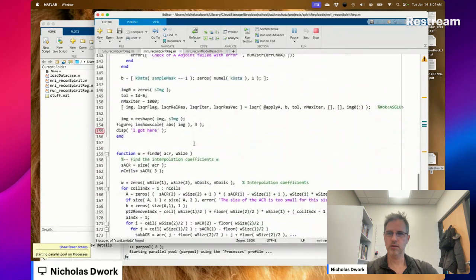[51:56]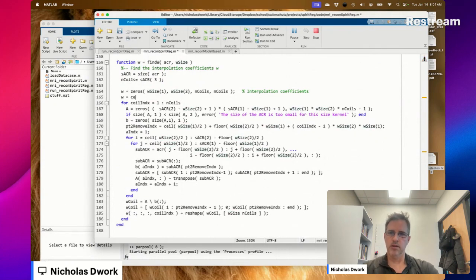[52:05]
W takes almost half a second. Oh. I forgot how to make a cell array. I think it's just cell.
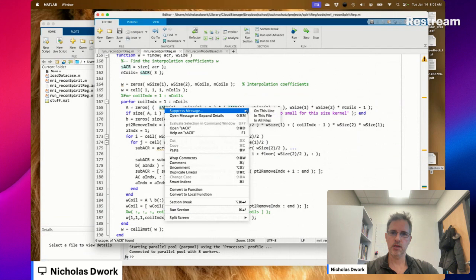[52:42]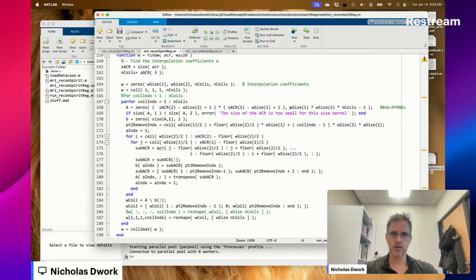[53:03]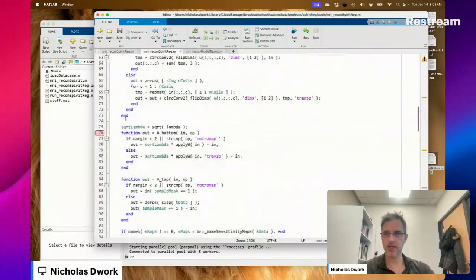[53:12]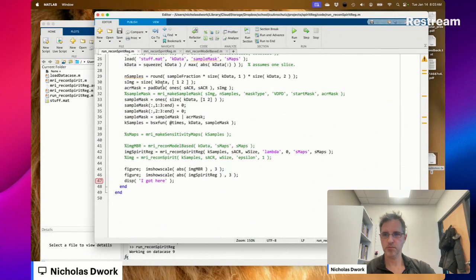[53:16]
All right. Maybe I parallelized that. Saying these two are broadcast variables. Okay. So maybe I just parallelize this and maybe it runs a tiny bit faster. Let's find out. Takes a third of a second. So we shaved off 0.15 seconds. Why not? Okay.
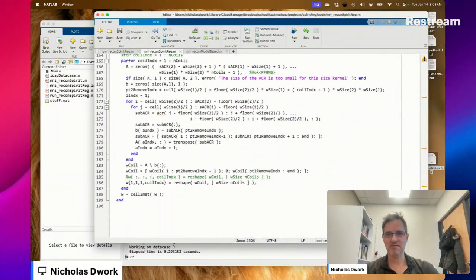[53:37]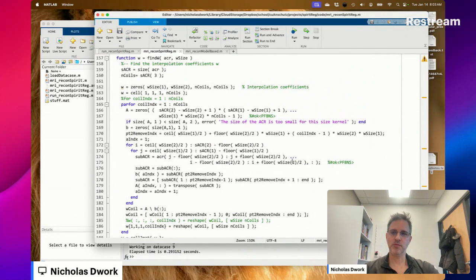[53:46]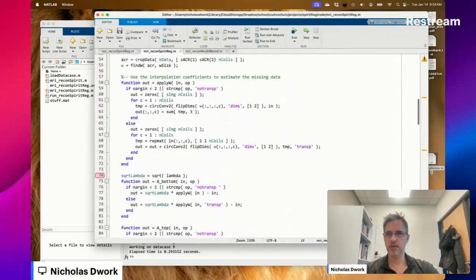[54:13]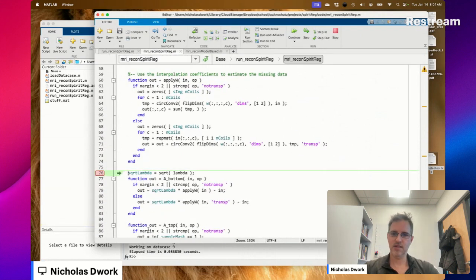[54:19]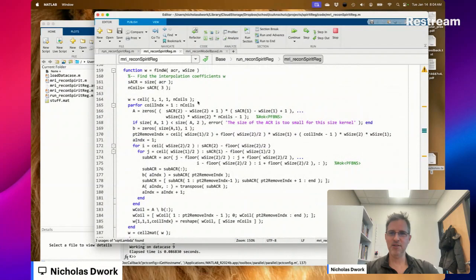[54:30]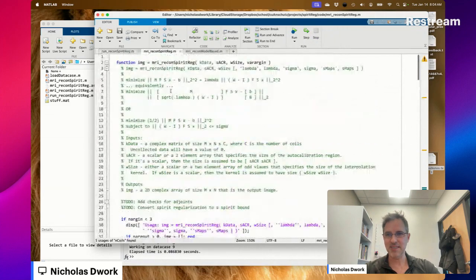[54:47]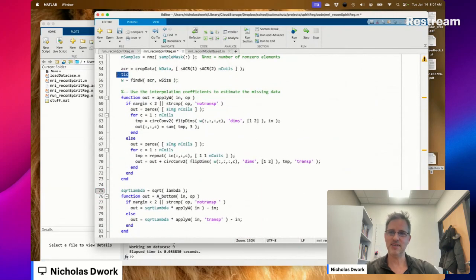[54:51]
We still got tic toc? Let's see. Whoa! It was because of the matrix allocation. I was still allocating the zeros for the matrix W. So it went from almost a half a second to under a tenth of a second. Like I say, why not? Matrix allocation is expensive. Didn't fix anything.
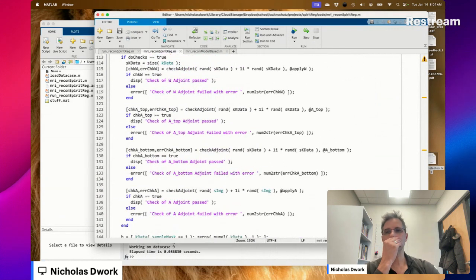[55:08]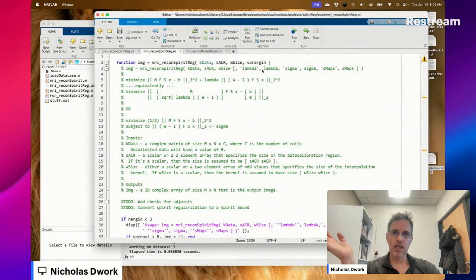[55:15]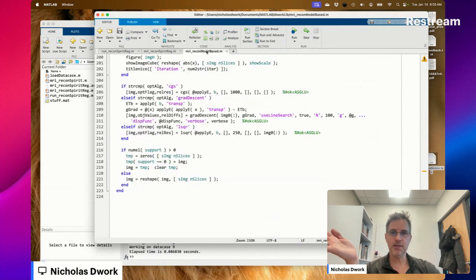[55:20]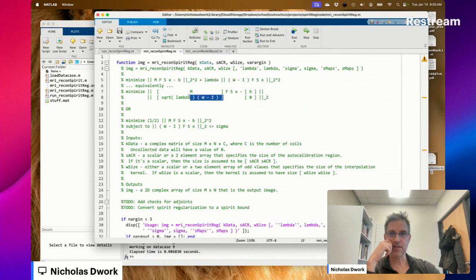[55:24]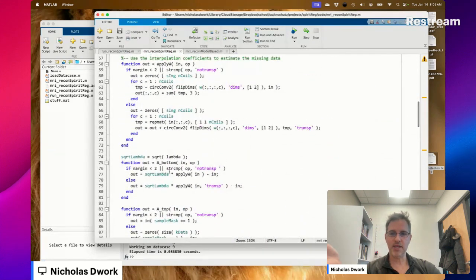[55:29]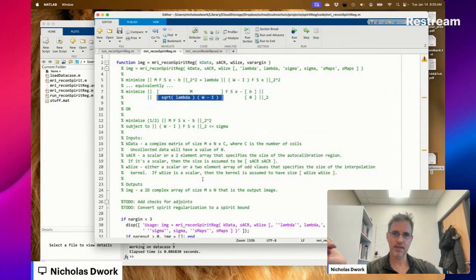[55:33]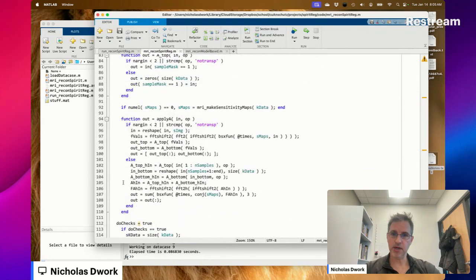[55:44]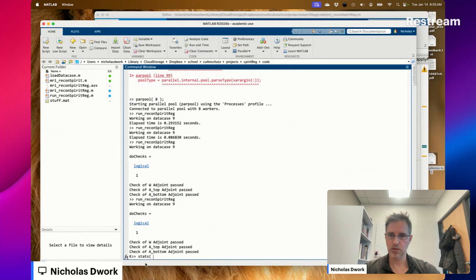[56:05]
Here we have B. In the future, if lambda were 0, the right thing to do is just call recon model based. So we don't have to do these calculations at all. Like, why are we multiplying W times anything if we're just going to multiply by 0 afterwards? For now, we can make sure that A bottom out is 0. It's not.
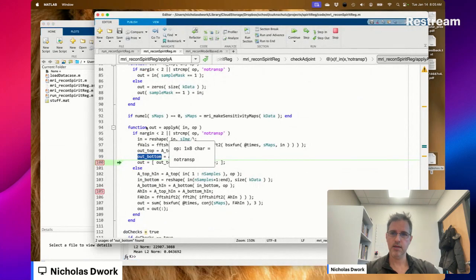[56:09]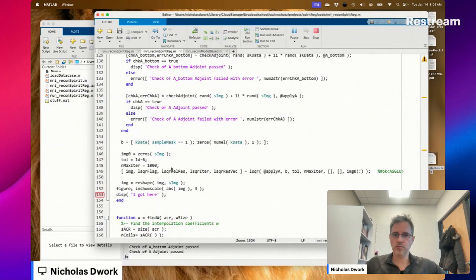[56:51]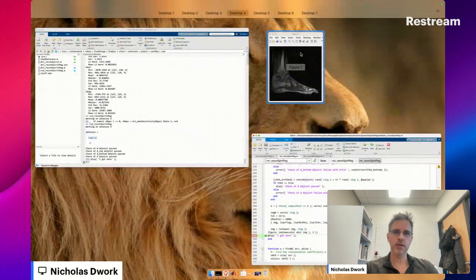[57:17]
What is lambda? Lambda is 0. Square root of lambda should be 0. So out should always, always, always be 0. Oh. That should have been distributed. Is that the problem? It's running longer now. Look at that. That looks pretty good.
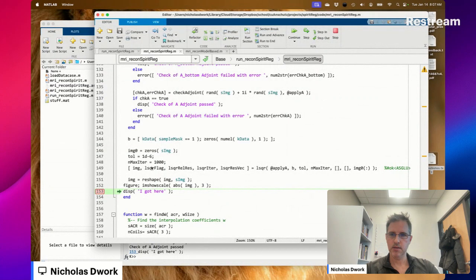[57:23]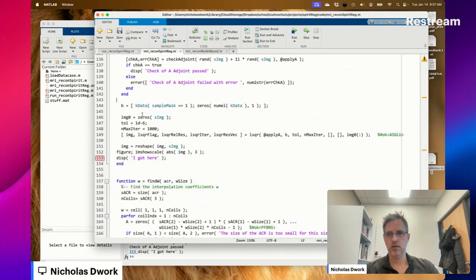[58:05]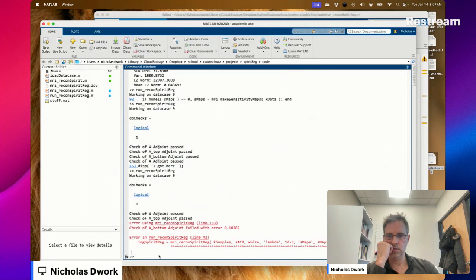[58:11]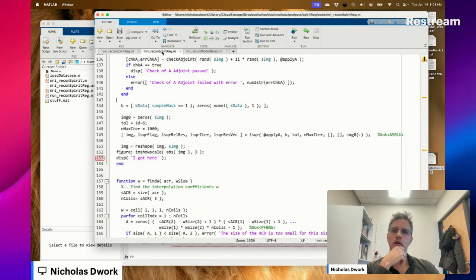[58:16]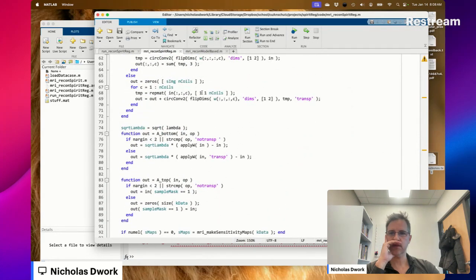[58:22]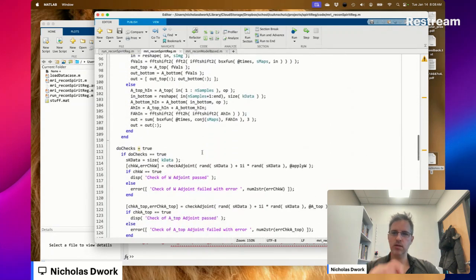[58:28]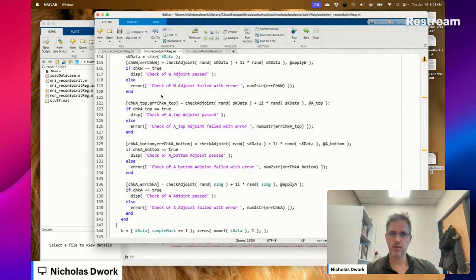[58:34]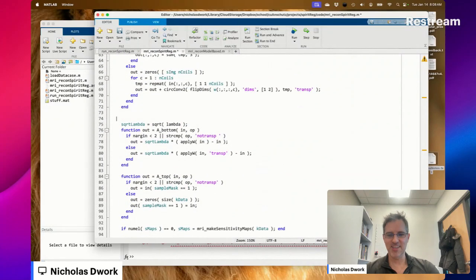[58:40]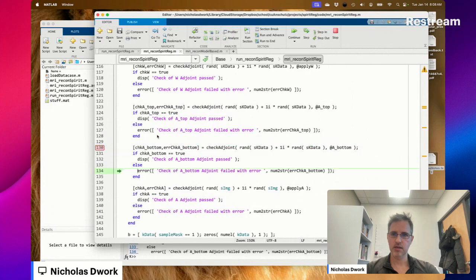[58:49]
Okay. What was lambda before? 1 times 10 to the minus 3. Now the adjoint operation fails. The adjoint operation of A bottom failed, right? All right. Let's say lambda's 1. Then does it fail? Yes.
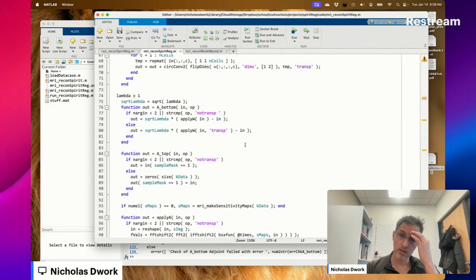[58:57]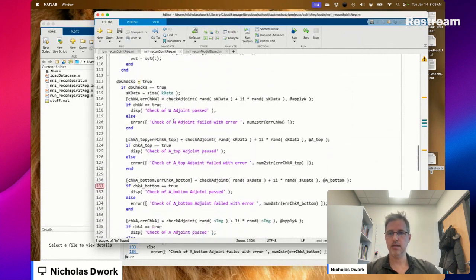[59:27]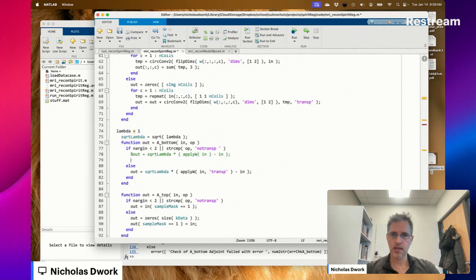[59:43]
Let's do the thing again that we did. We're going to get rid of one term at a time and see. Let's see if this passes. Now, from what we just saw, it shouldn't. Right. Oh my gosh. How did that space show up there again?
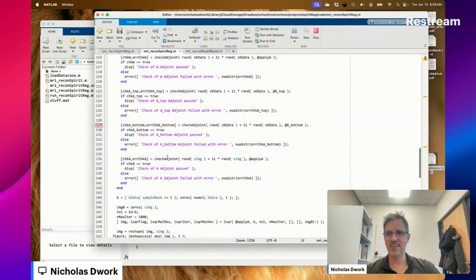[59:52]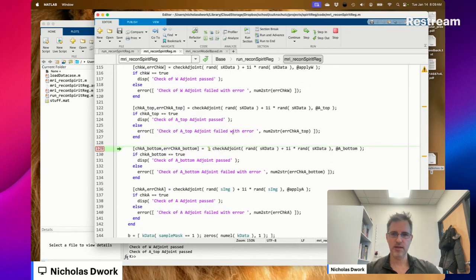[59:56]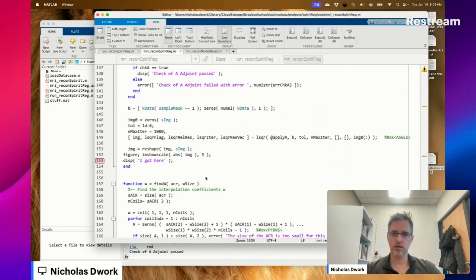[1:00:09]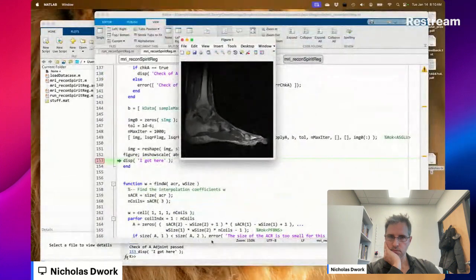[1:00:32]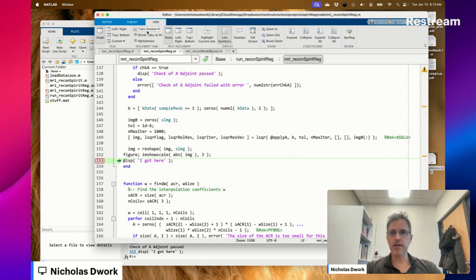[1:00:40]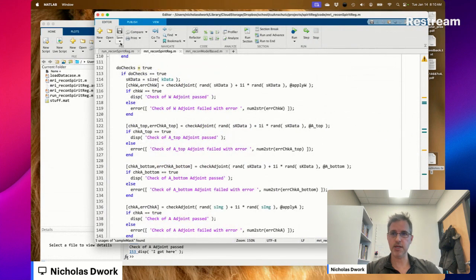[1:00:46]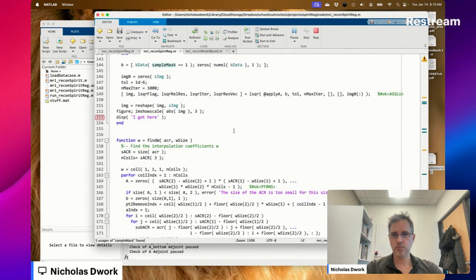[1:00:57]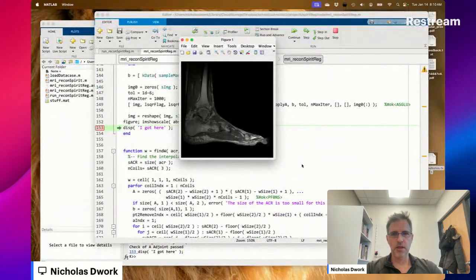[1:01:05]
Okay. That doesn't, so the regularization there doesn't seem to be having much of an effect. I think we've solved the bugs. Certainly the checks are passing now. Let's increase the regularization by a factor of 1,000 and see what happens. That's cleaner, isn't it? This is working. Okay.
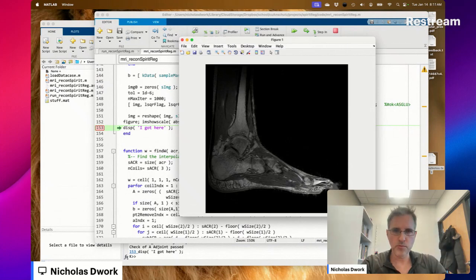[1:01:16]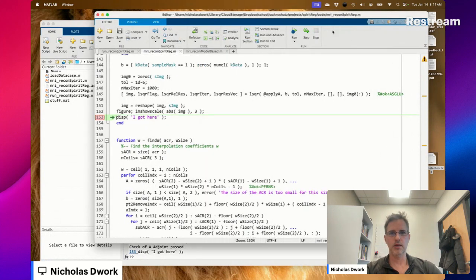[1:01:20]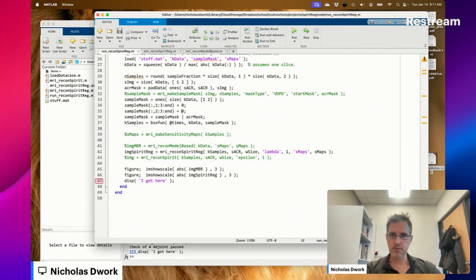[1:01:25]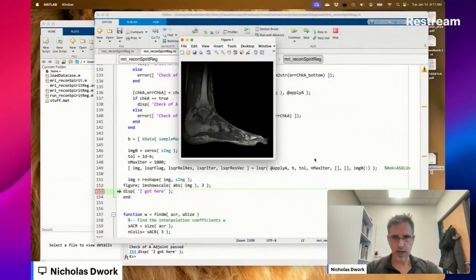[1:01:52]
I want to run another test, and then we'll be done for today. I want a different undersampling pattern. We undersample, so this is only 25% of the data now. We're undersampling horizontally and vertically. Wow. That's with only 25% of the data. Well, more than 25% because of the auto calibration region. That is a very good result.
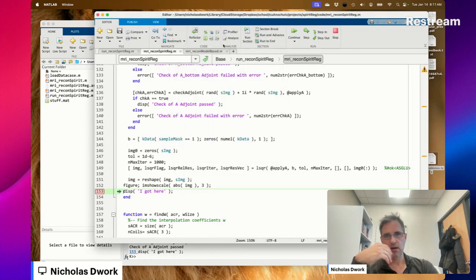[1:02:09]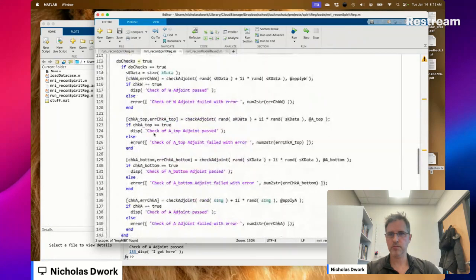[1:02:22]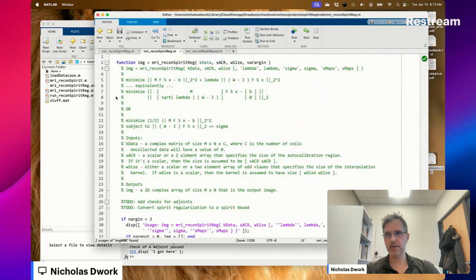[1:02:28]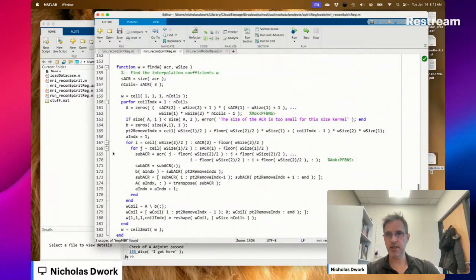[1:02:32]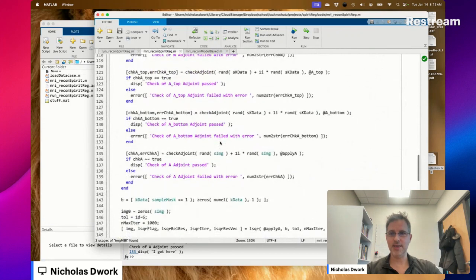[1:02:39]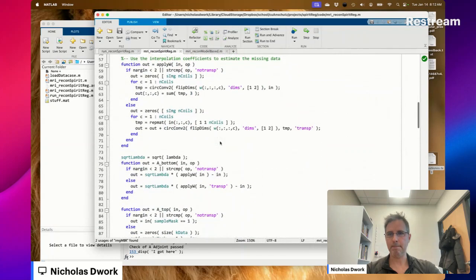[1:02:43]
So if we compare that to model-based reconstruction, starting to get ready to check in this code. Checking to see if there's anything in the first column here. There doesn't seem to be. And let's not forget, we've made it more efficient by parallelizing here. So that's incredible. I'm wondering if I can make this more efficient, which we'll think about in a second.
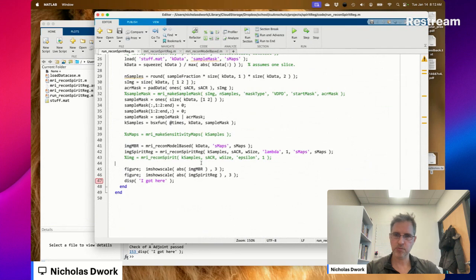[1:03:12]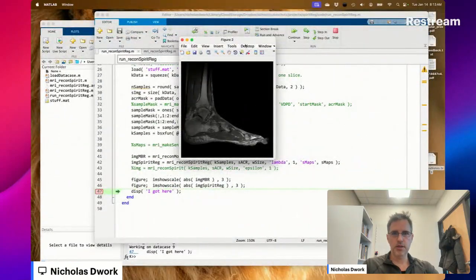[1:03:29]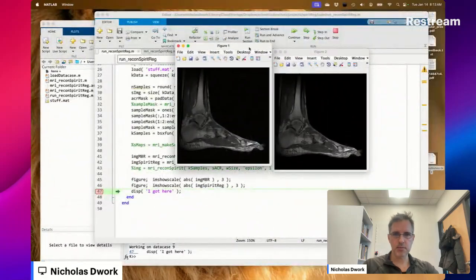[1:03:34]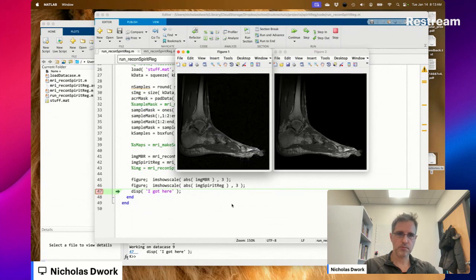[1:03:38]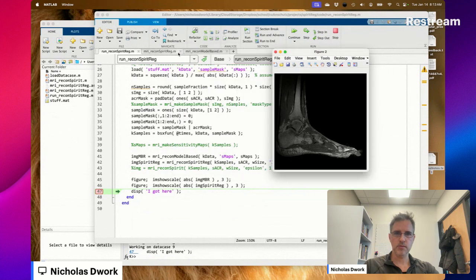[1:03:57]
Right now I want to compare the results of model-based reconstruction to those with SPIRiT regularization. Should have titled these. So this is SPIRiT regularization. This is model-based reconstruction. Those look very similar. I'm astounded at how well model-based reconstruction is doing right now. I mean, how much do I need to undersample?
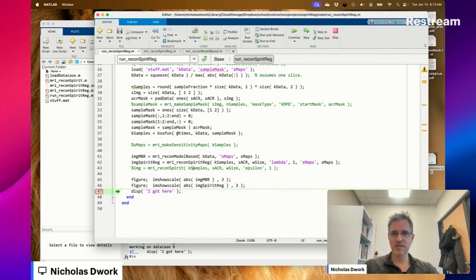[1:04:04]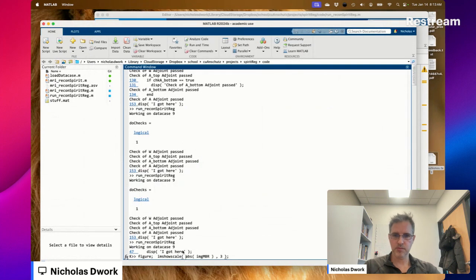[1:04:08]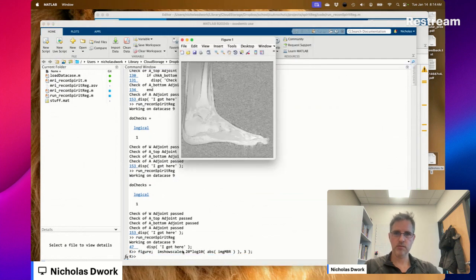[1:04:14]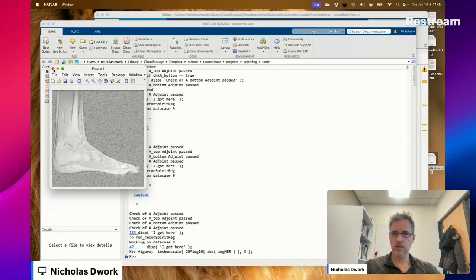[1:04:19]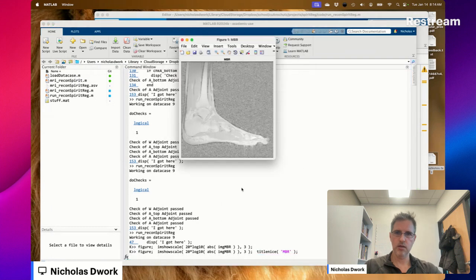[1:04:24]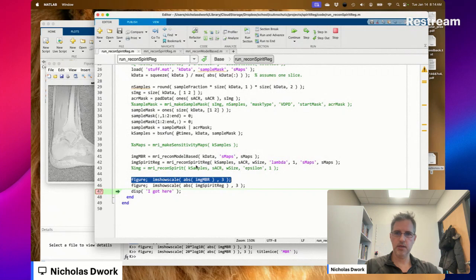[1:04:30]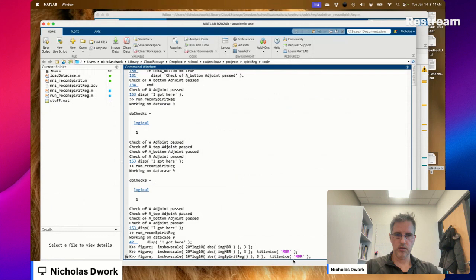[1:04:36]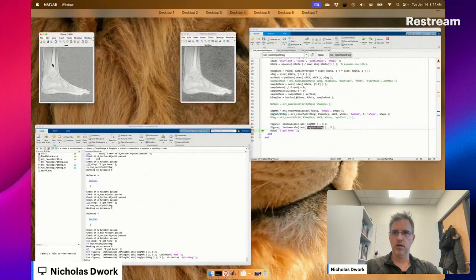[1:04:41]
Okay, that's model-based reconstruction in the log scale. Let's do the same thing for SPIRiT reg. Okay. A slight difference. We seem to have beaten down the noise a bit, but not much more than that.
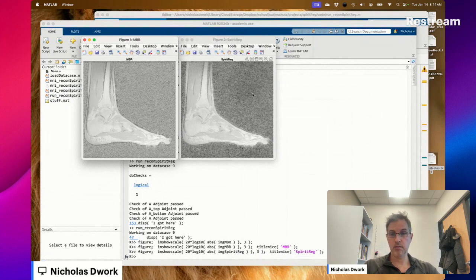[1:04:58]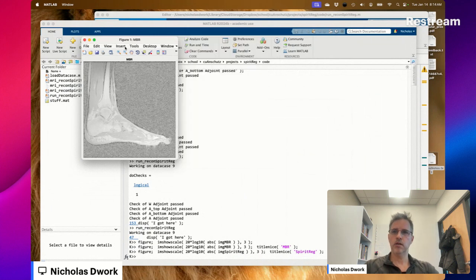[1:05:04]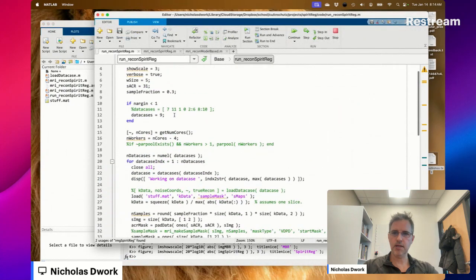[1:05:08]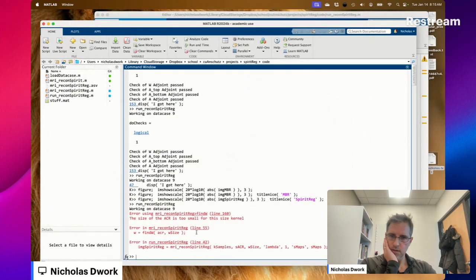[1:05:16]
What's the size of the auto calibration region? The size of the ACR is too small for this kernel. This kernel is 5 by 5, okay. 19.
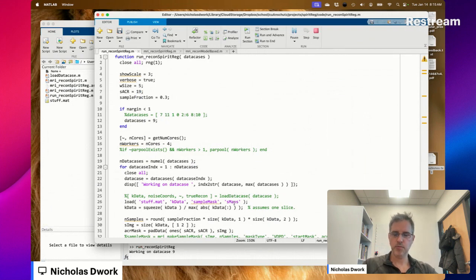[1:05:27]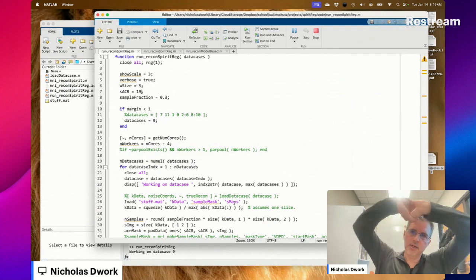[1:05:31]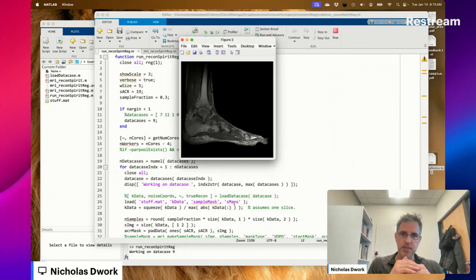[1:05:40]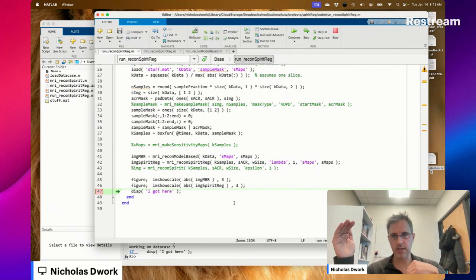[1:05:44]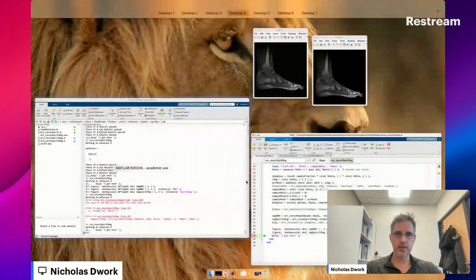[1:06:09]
There's this weird phenomenon. We're solving for coefficients for every coil. So the more coils, the more variables we have, which means the larger we need to make our linear system in order to make sure the system is overdetermined. But that's weird because more coils is more information. You would think you'd need less data to reconstruct a high quality image with more information. I still struggle to wrap my head around that one.
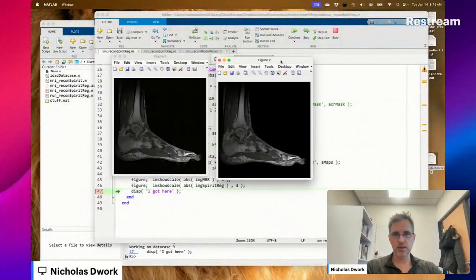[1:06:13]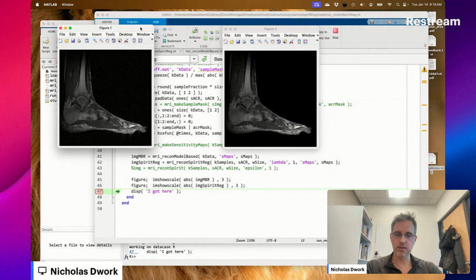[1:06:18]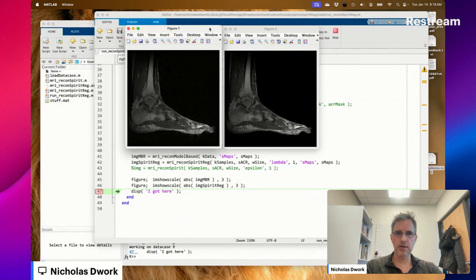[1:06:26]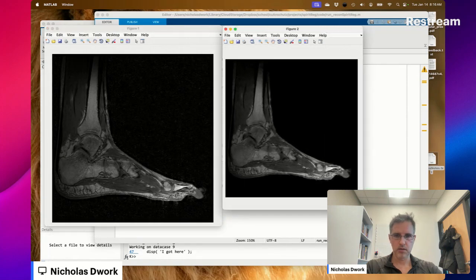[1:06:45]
Okay, this is with a dramatically reduced auto calibration region, not dramatically, 31 to 19 or something. SPIRiT reg is on the right, MBR is on the left. Can you tell the difference? I can't. Oh yeah, look, you see these little sparks of noise over here? See this? It's gone here. That's something meaningful.
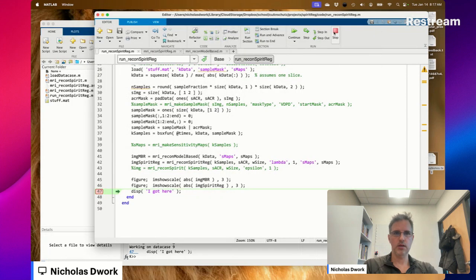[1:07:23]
If this little spark is inside the ankle, and assuredly it is, we're seeing it because the contrast is higher in the noise region, but this is the magnitude of error, presumably, that's inside the ankle. And if someone were paying really close attention to a particular place in the anatomy, maybe that makes a difference. I don't really know. Okay, what if we sent this to 100, 1,000 even? What happens?
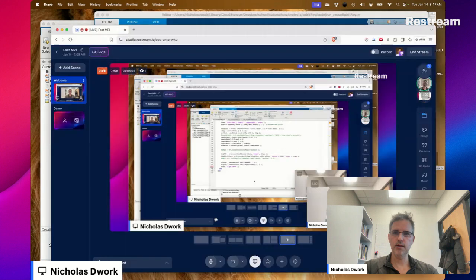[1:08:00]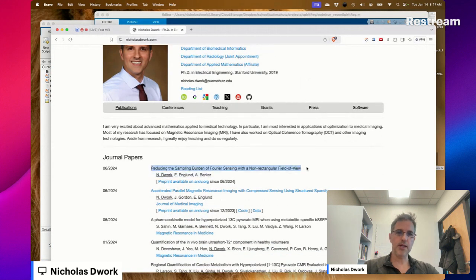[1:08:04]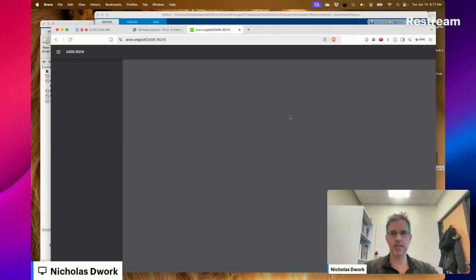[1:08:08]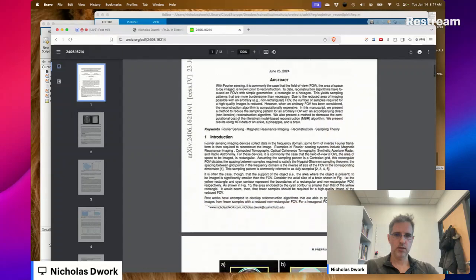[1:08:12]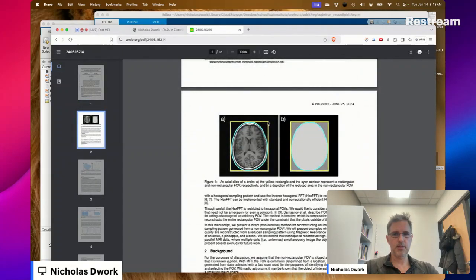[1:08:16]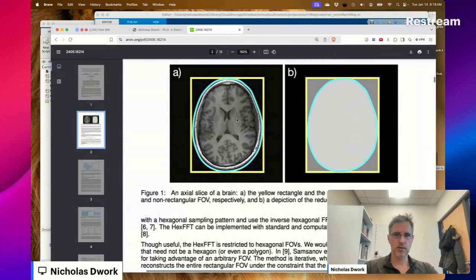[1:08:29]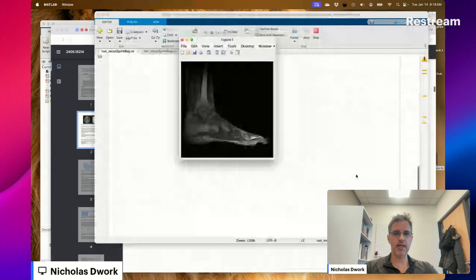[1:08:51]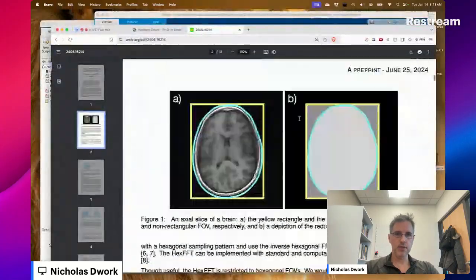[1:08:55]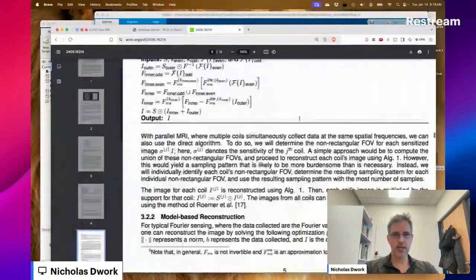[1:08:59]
Okay, I've got an entire paper on arXiv describing the non-rectangular field of view thing. This is the support matrix. The idea is that the field of view in MRIs is a rectangle, and it must encompass the entire object. But if you could draw a non-rectangle as the field of view, then that would encompass less area, and you would need less data. You should need less data to reconstruct a high-quality image in this light gray region than in the dark gray and the light gray region. And indeed, I found a way to reduce the amount of data required and still reconstruct a high-quality image.
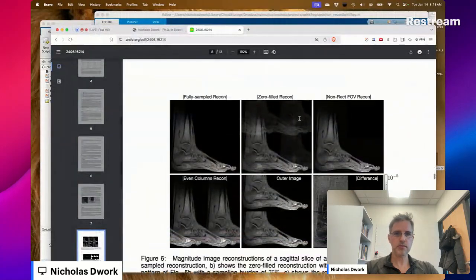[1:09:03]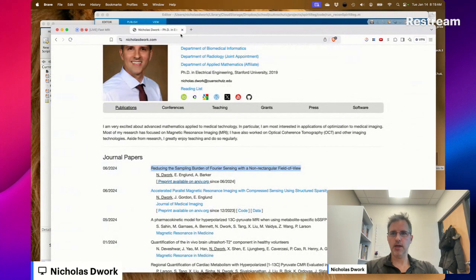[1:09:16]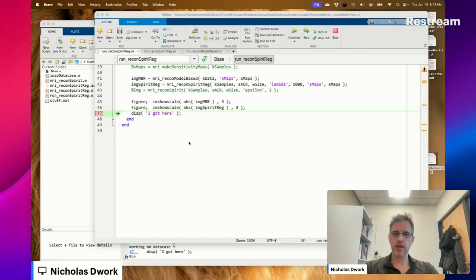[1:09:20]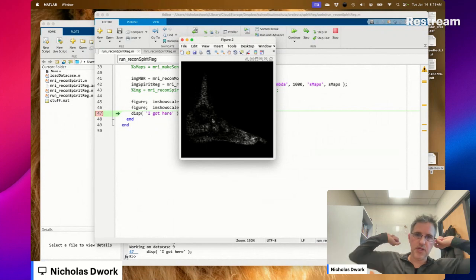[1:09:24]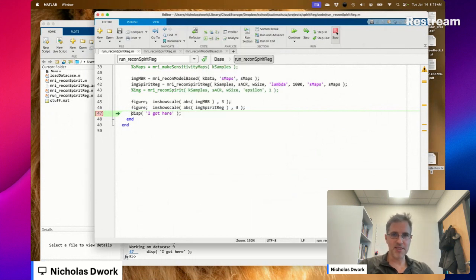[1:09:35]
So here's an example. Here's fully sampled. Here's with 25% less sampling, and the difference is not much. Okay. So this is what happens when we set the regularization parameter too high. I knew it would break. That's fine. It broke. Great. It breaks in an interesting way. I've never seen something break like that. Okay, so we now have a slight improvement when we compare it to just regular parallel imaging, model-based reconstruction.
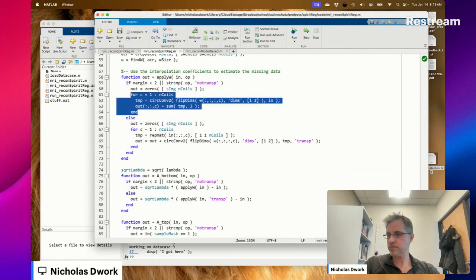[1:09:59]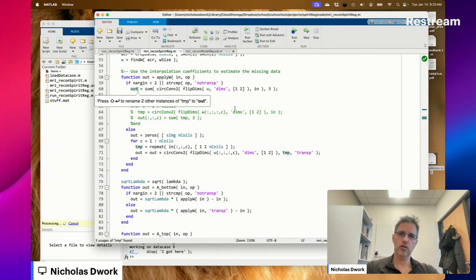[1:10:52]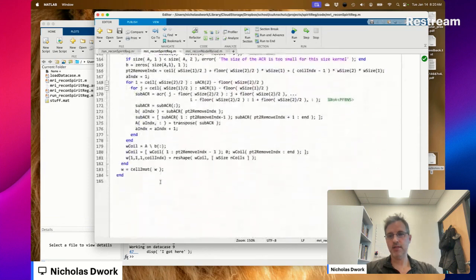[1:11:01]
Okay, so before we go, I had asked this question. Let me check what I got going on today. I need to get going. Okay. I'm wondering if instead of this, can I just do this? Are those two codes the same? I think they might be. Let's see if it gives us the same image.
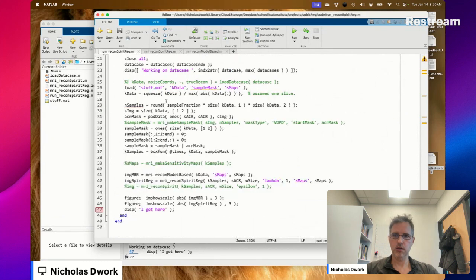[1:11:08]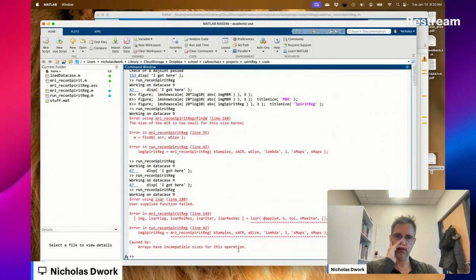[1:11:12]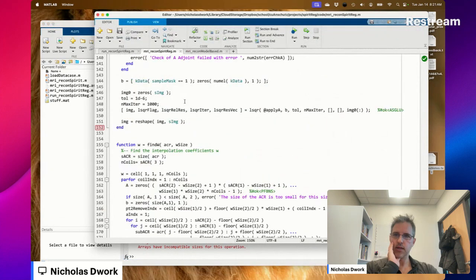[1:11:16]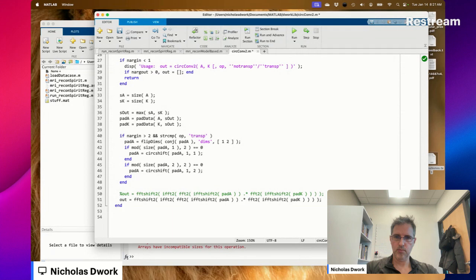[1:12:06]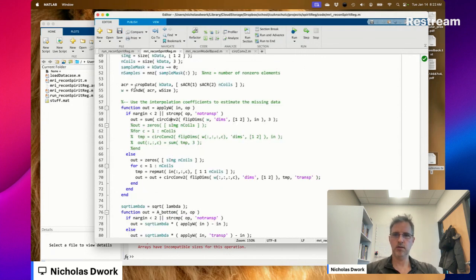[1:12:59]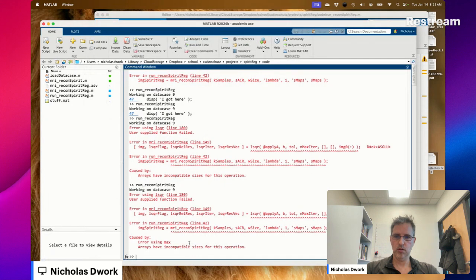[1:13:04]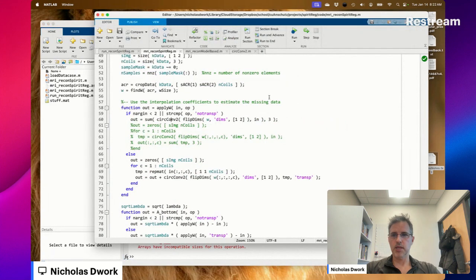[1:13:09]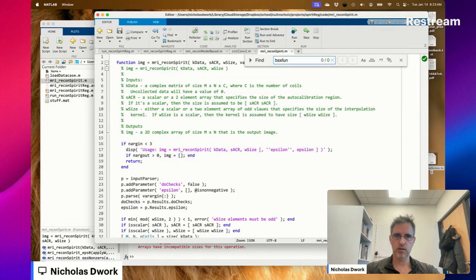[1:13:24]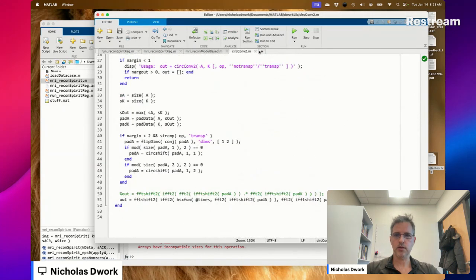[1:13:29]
Oh. Okay. The issue is that circConv2 assumes you have the same number of dimensions in both the kernel and in both the first argument and the second argument. Right? But if I do this, no, that's wrong. I wonder if it works then. Arrays have incompatible sizes. Looks like it doesn't. Something to pursue at a different day. Apparently, we're not doing that today. So a to-do item is to make circConv2 work when A and K have different numbers of dimensions.
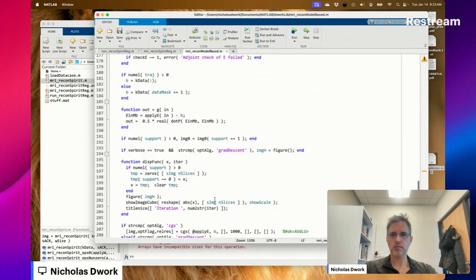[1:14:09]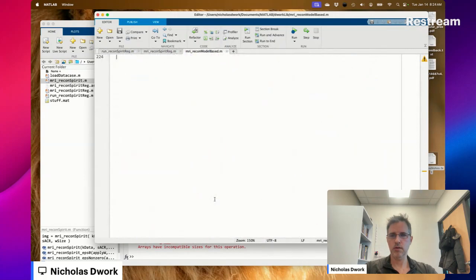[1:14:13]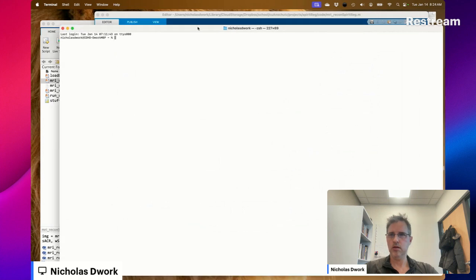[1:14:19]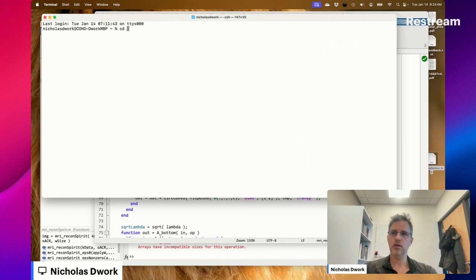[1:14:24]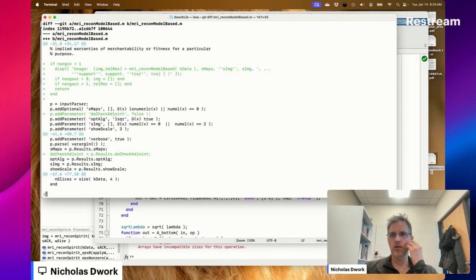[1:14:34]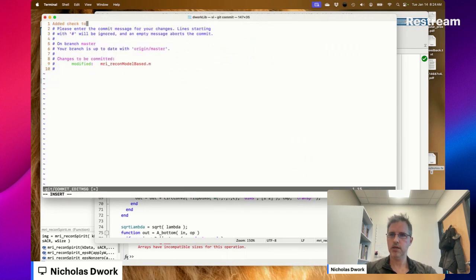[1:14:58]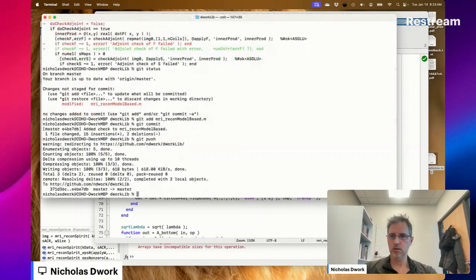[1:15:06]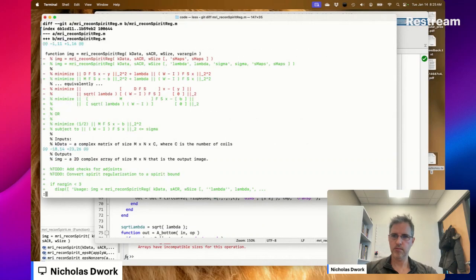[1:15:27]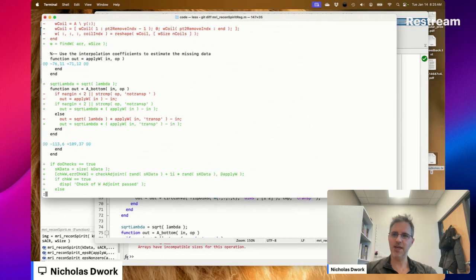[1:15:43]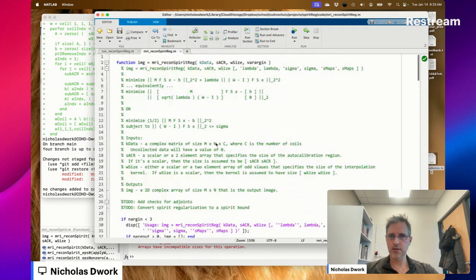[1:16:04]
Okay. Let's go through and check all this stuff in. What did I... Oh, we fixed the bug here. In a sense, we added usage and we added this check to make sure that if you're passing in multiple coils, then you're passing in sensitivity maps. Added usage, made W more efficient, fixed a bug, added checks. Yep. Okay, so the only change that I saw, we don't want this anymore. And this is not yet.
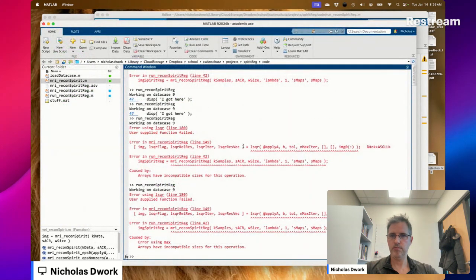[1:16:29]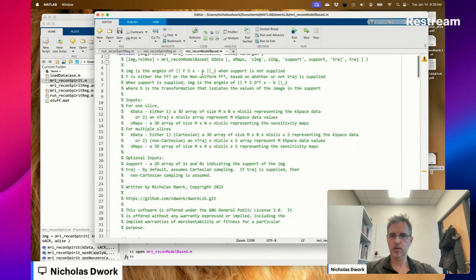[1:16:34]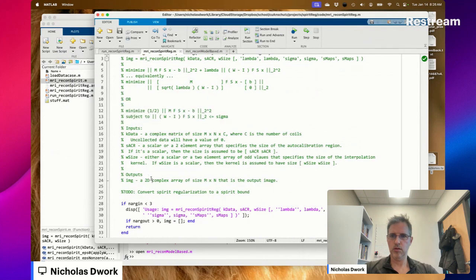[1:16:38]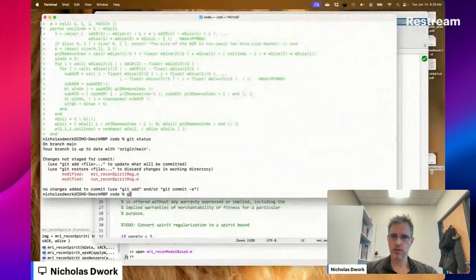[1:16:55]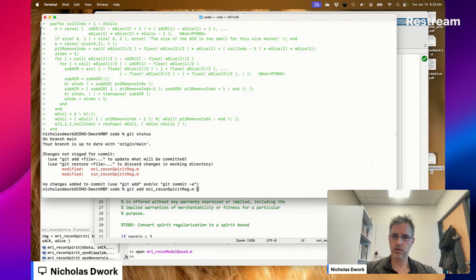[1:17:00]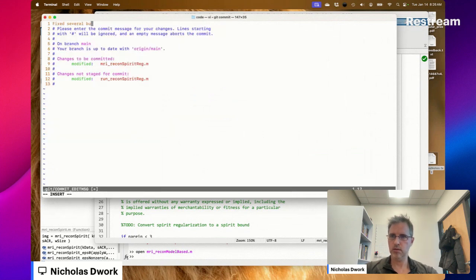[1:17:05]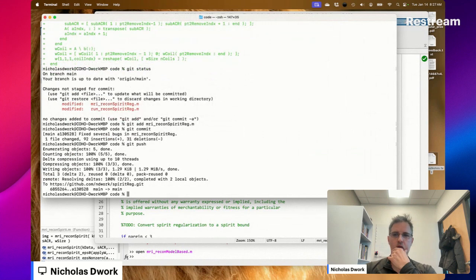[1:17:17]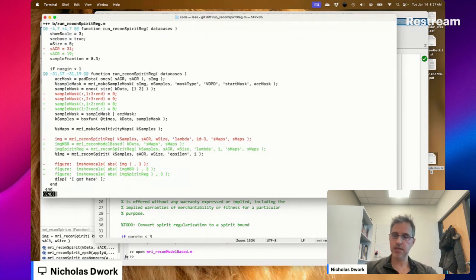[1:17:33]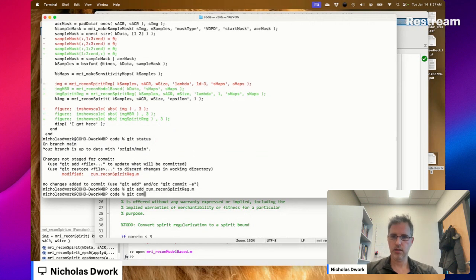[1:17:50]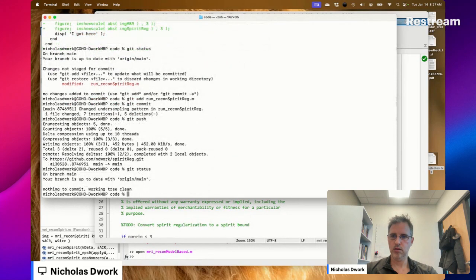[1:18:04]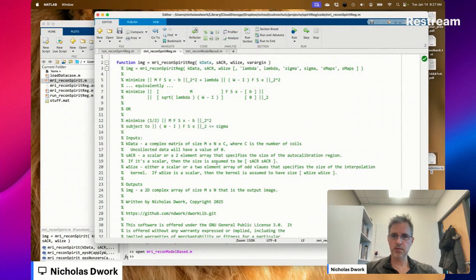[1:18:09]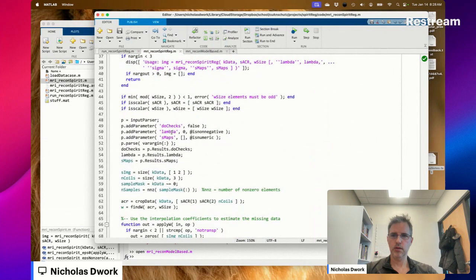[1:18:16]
Huh? In run recon SPIRiT Reg, we change the size of the auto calibration region, change the undersampling mask, and it still works. Model-based reconstruction works very well here, and SPIRiT regularization works well. Okay. This is what we're going to do next time. This to do. We've already got it in the usage, but not in the parameter list.
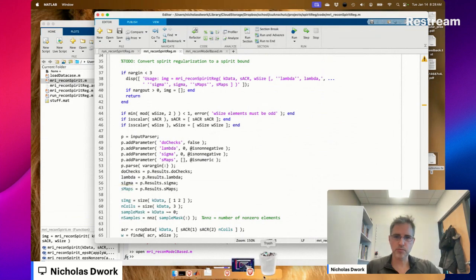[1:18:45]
So today was an exciting day. We've now compared our new algorithm to model-based reconstruction, and we see that the new regularization term does indeed help. It improves the quality, and that's wonderful. We're on our way to having created a whole new way to accelerate MRI, which is really exciting, I think. Thanks for stopping by. See you on the next stream.
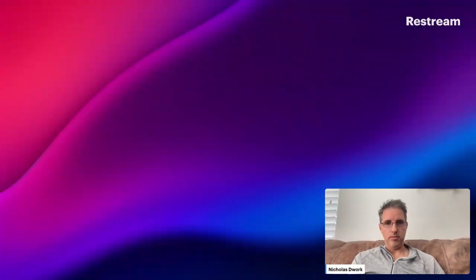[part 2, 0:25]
Today, we're just going to do a little tinkering and maybe get started on some compressed sensing. See how it goes.
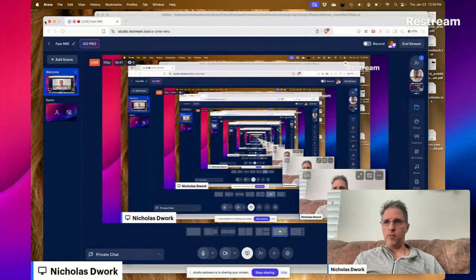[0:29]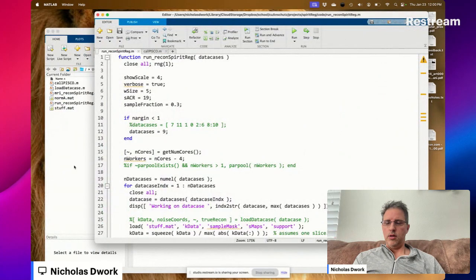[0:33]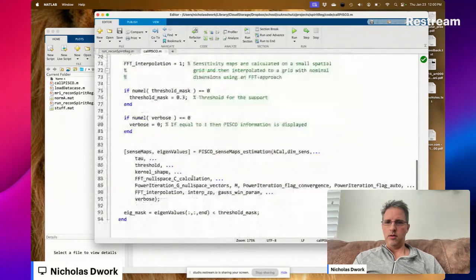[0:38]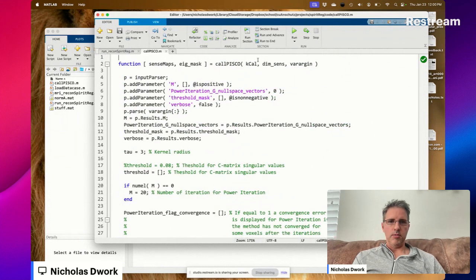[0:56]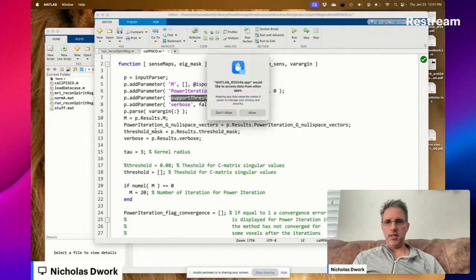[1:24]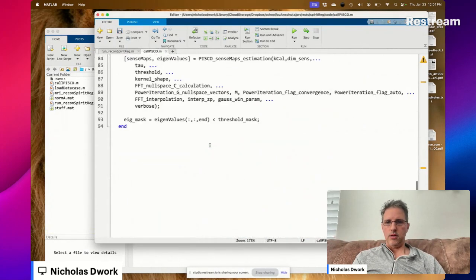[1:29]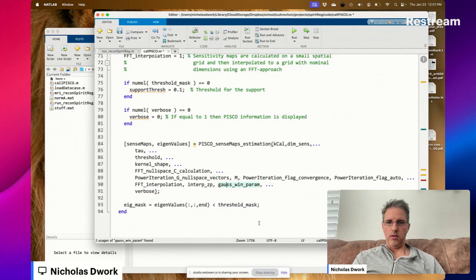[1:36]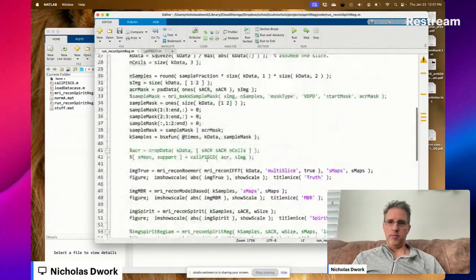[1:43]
All right, so there's this threshold mask for the support value. We're going to call it support threshold. I don't actually know if it can be 0. I don't think it can. Oh, we've already got threshold mask as an input. Okay, so we're just going to change this to support thresh because that name makes more sense to me.
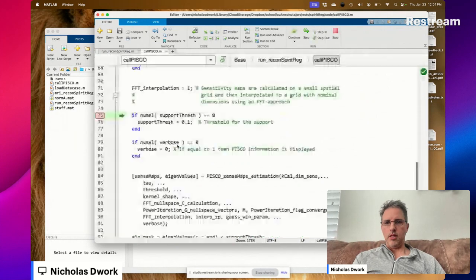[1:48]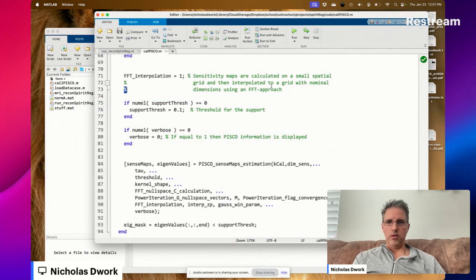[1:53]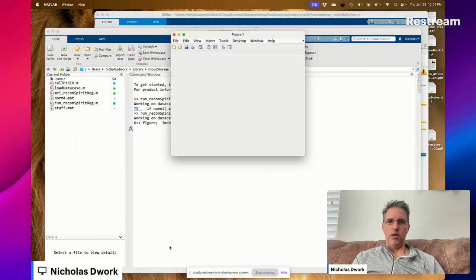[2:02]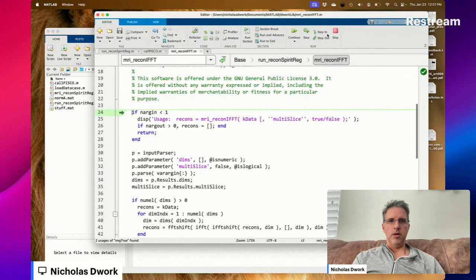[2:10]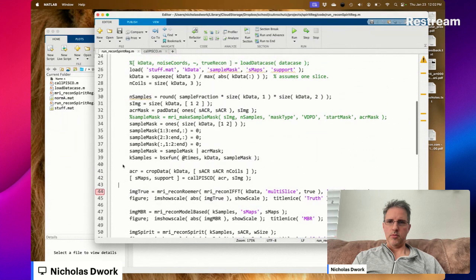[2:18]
And now, if we call PISCO, you get this. Oh, no. Okay, so I'm honestly a little confused right now.
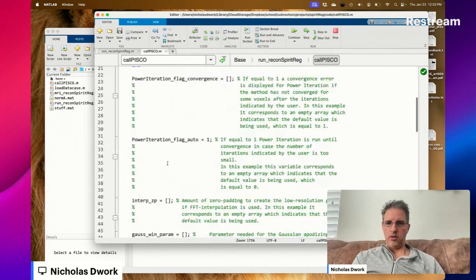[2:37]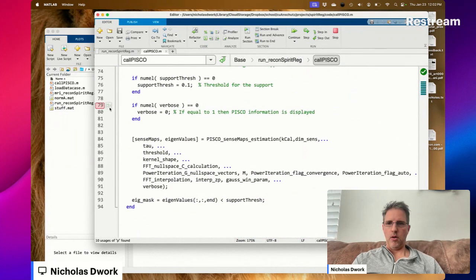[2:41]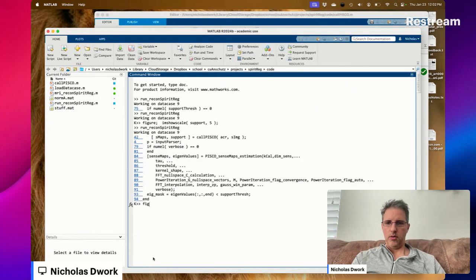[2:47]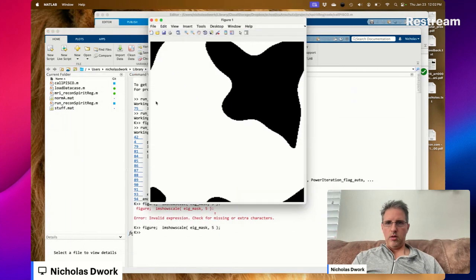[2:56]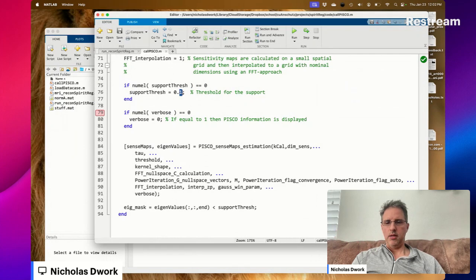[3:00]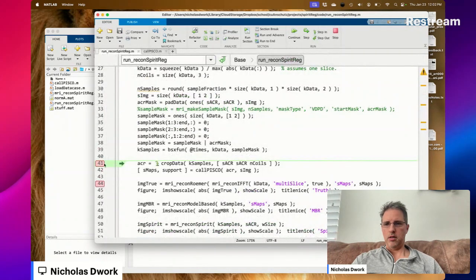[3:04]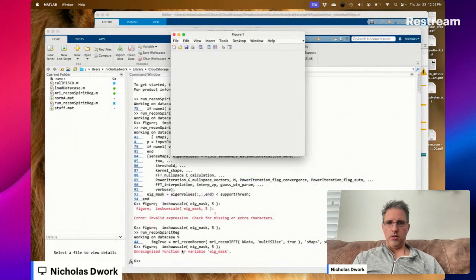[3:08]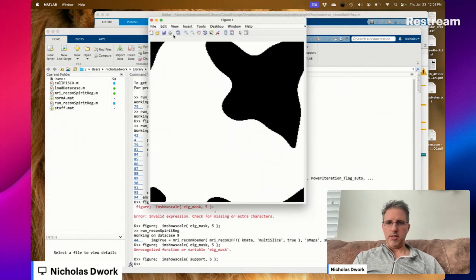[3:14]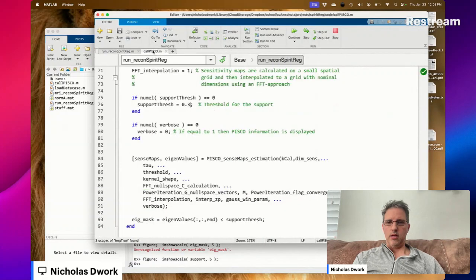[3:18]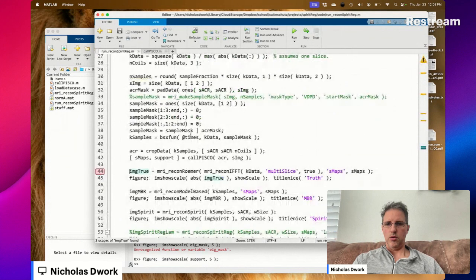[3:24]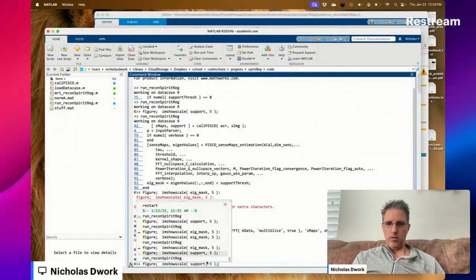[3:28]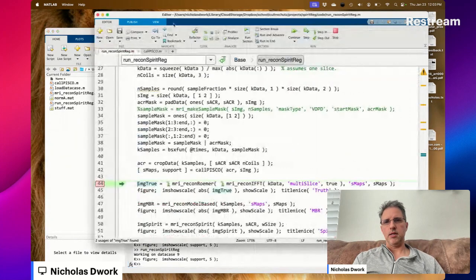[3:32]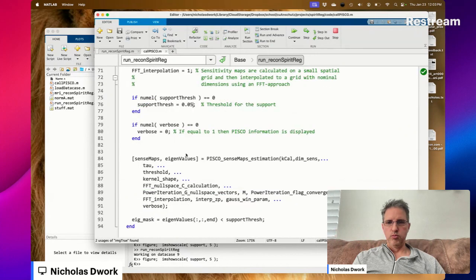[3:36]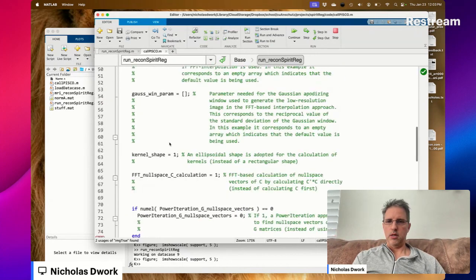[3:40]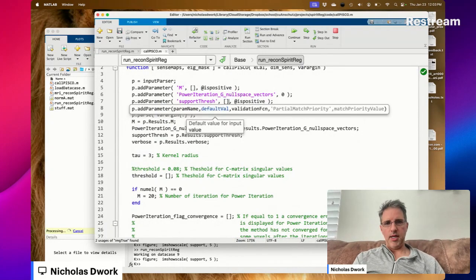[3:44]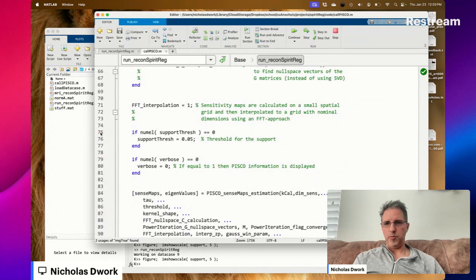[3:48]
Okay, and what if I set it to 0.3? Does the support get smaller or larger? Same size? That doesn't make sense, does it? Same size. That doesn't make sense. Oh, boy. Oh, it's because when I don't supply it, okay. There we go.
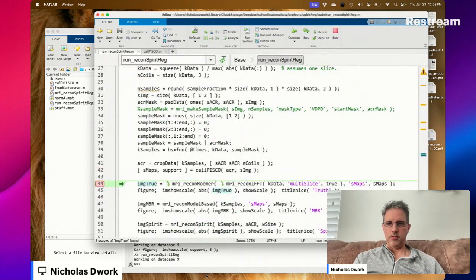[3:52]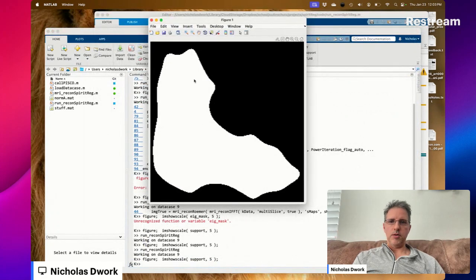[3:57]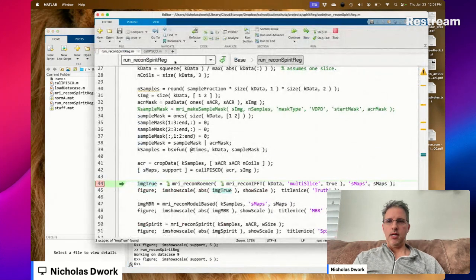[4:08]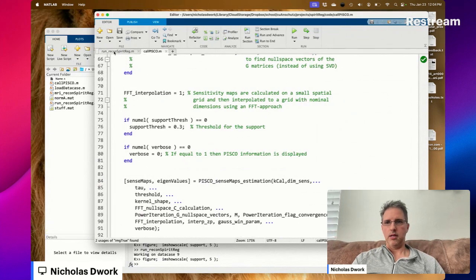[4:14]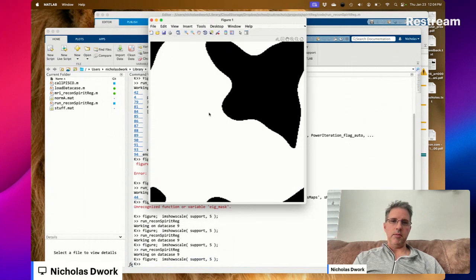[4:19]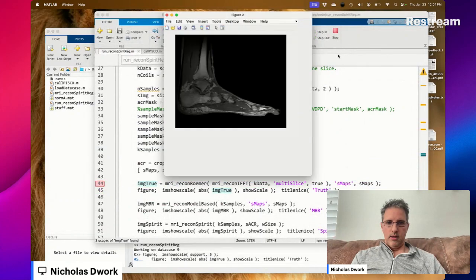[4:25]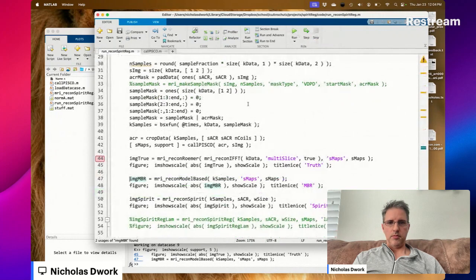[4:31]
Okay, so with a support threshold of 0.05, the support's small, and this does not include all of the leg, obviously, because the leg extends up all the way to the top of the image. And then what if we set this to a large value like 0.3? Now it does go all the way to the top of the image, which indicates that the support might actually encompass all of the support of the image.
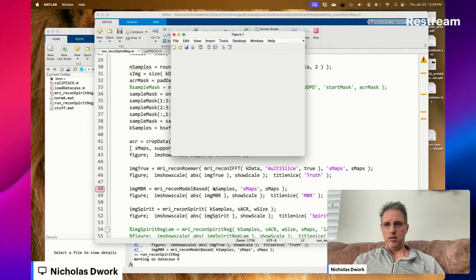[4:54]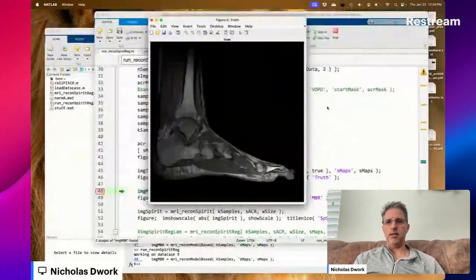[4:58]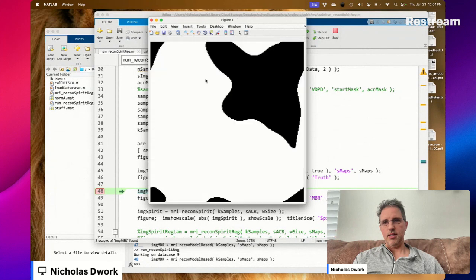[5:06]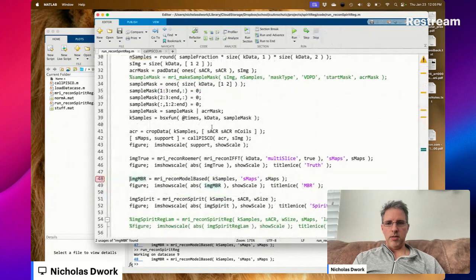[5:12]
Okay, so we needed a large support here, right? And even though there's leg there, of course, it's hard to see. It's not very significant intensity. Now here's what I'm wondering.
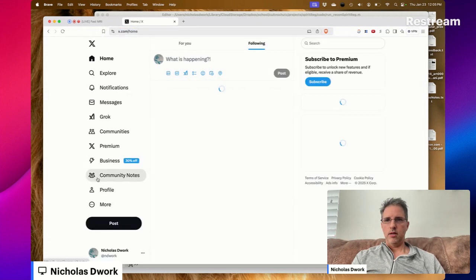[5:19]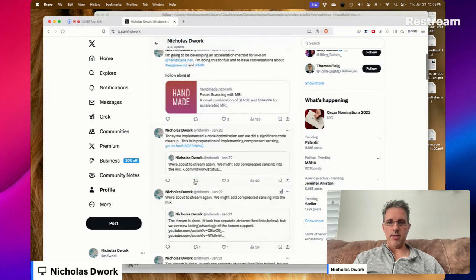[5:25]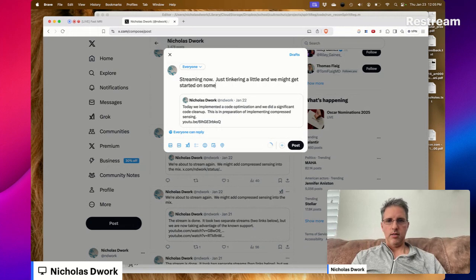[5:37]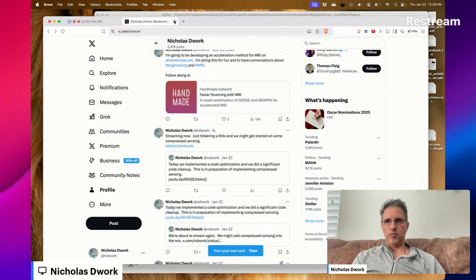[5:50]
Dear streamers, you know what I forgot to do? I forgot to tell my massive audience that I'm currently streaming.
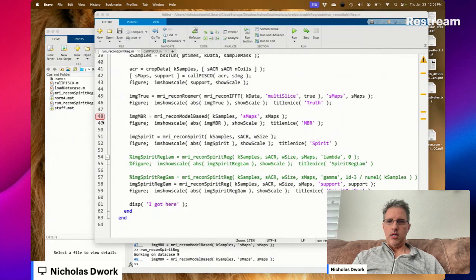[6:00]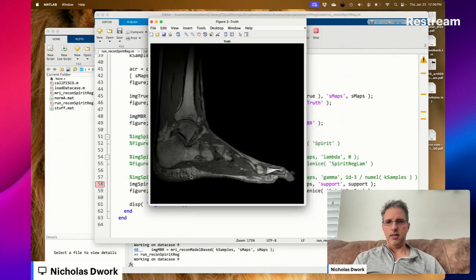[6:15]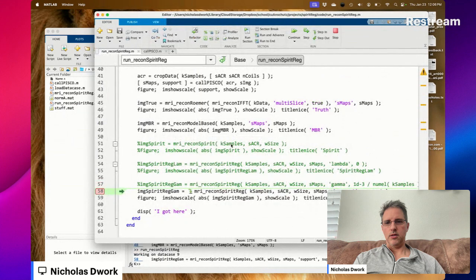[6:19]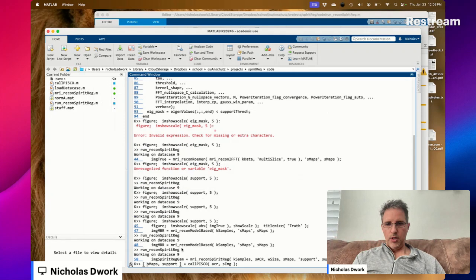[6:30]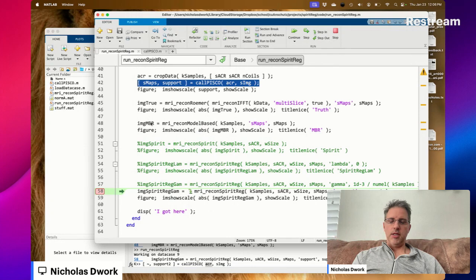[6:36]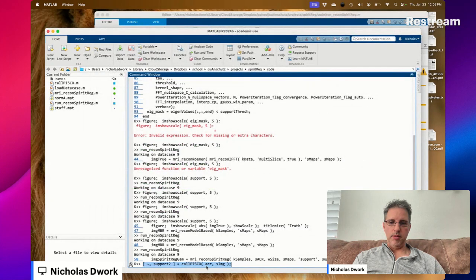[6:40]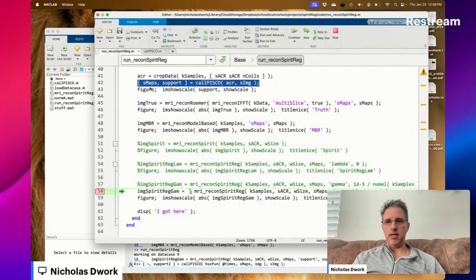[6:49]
So we're going to do this stuff. Let's not do SPIRiT. Let's do model-based reconstruction. Let's just try that because it's fast. So this is truth. Now my question is, can I call PISCO with all the data? This returns, so I guess all the data would be BSX times SMAPS times image, where image is the reconstructed image, image MBR.
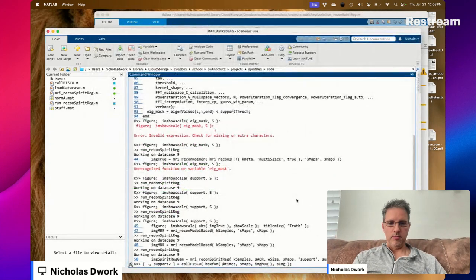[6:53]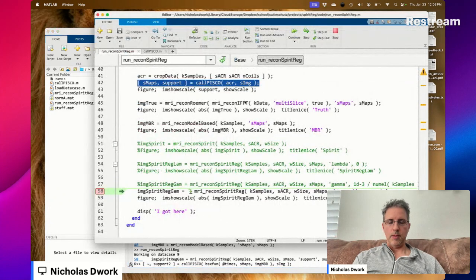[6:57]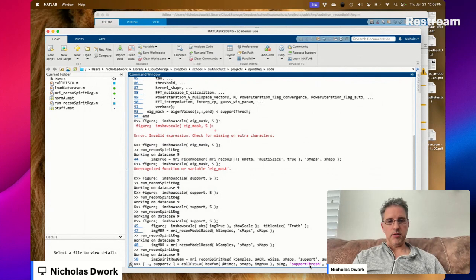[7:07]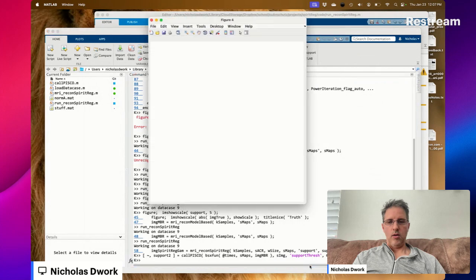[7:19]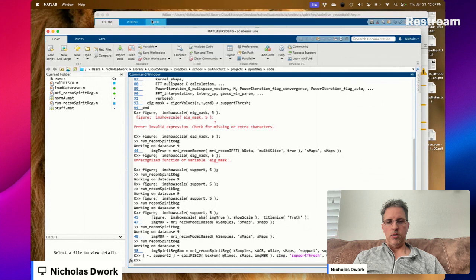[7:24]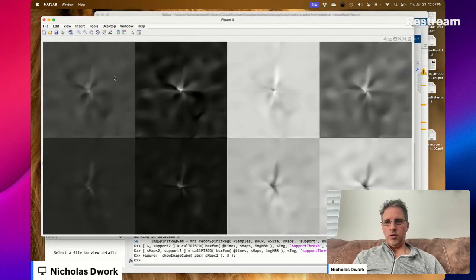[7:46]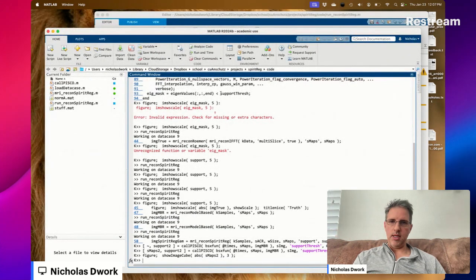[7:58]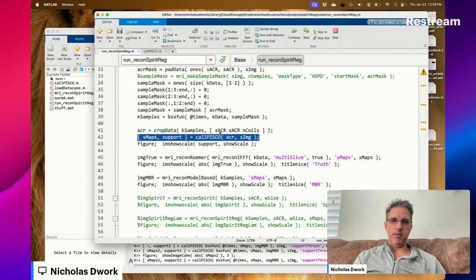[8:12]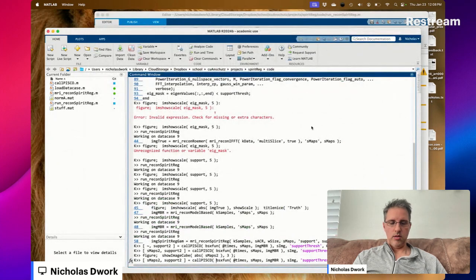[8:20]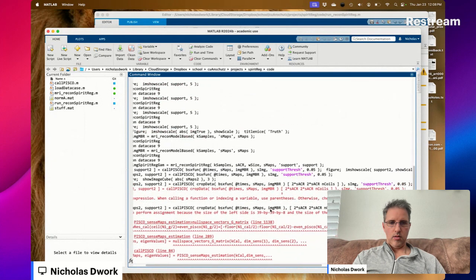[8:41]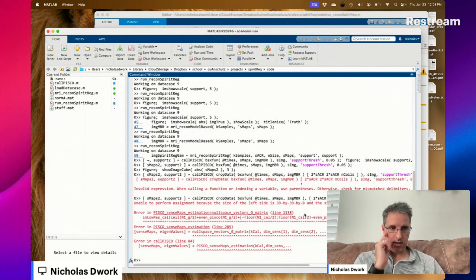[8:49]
What if I made the support thresh much smaller now? That doesn't seem right. So these are the sensitivity maps that show up with all the data. So does PISCO assume that the auto-calibration region is small? Okay, if that's the case, what if we cropped it to double the size? The size of the left is 39 by 39 by 8, and the size of the right is 38 by 38 by 8. Does PISCO assume that the ACR is odd or something?
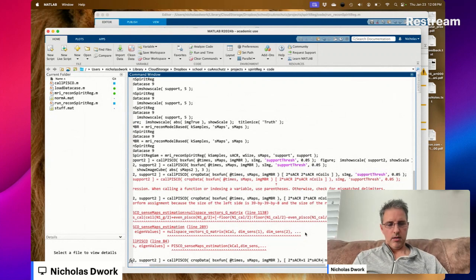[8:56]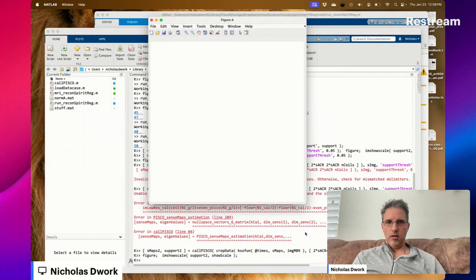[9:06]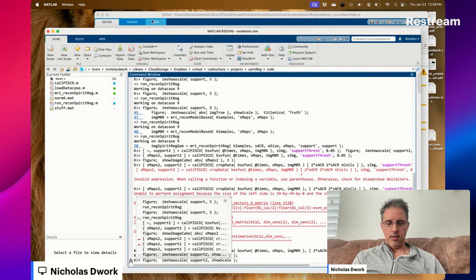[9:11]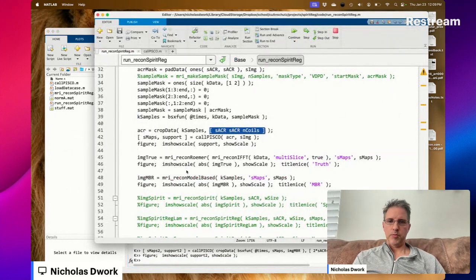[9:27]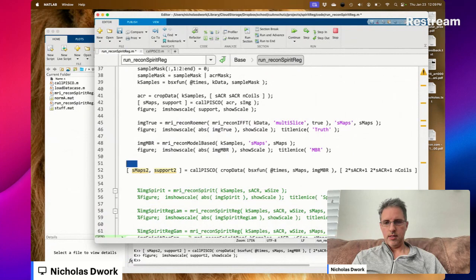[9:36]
So it's just getting the whole support now. I don't understand. Oh, that was silly. I got to take the FFT too. Okay, so we're going to put this into the code so that we could play with it there. So here's my contention, right? What I'm wondering is, we could call this the augmented K samples. Let's call it the augmented ACR.
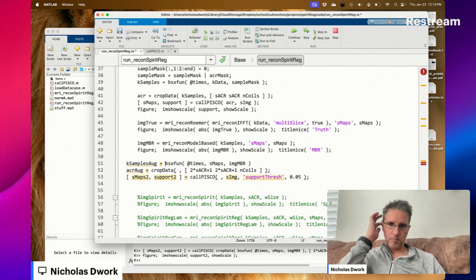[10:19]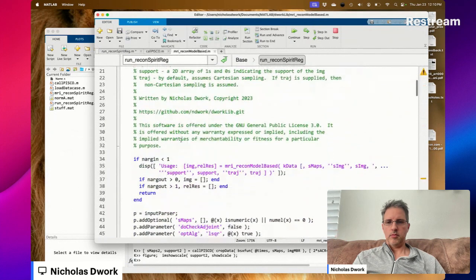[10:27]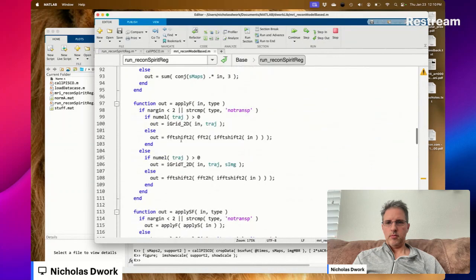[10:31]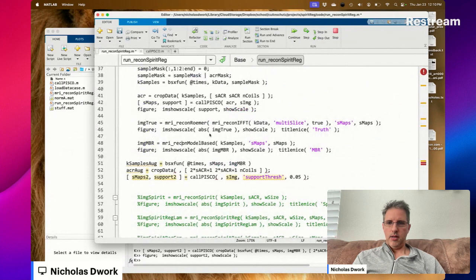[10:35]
K samples augmented is equal to, now we're going to have to do an IFFT shift 2, followed by an FFT2, followed by an FFT shift 2. These are the K samples augmented. This is the ACR augmented.
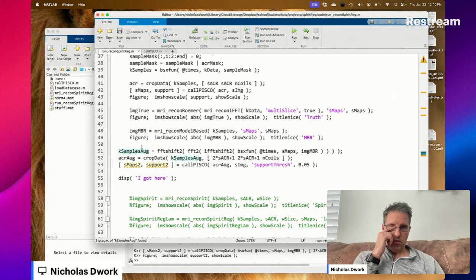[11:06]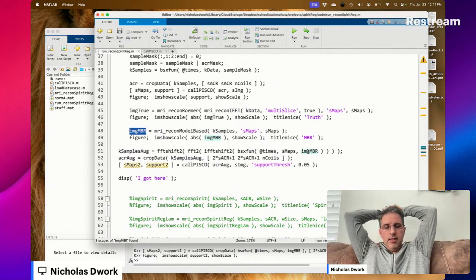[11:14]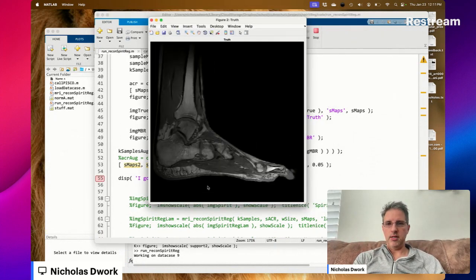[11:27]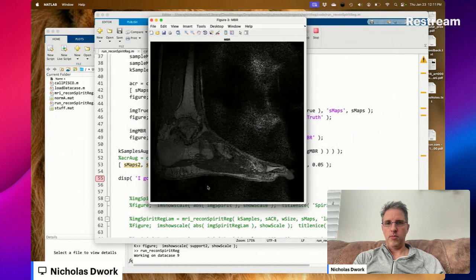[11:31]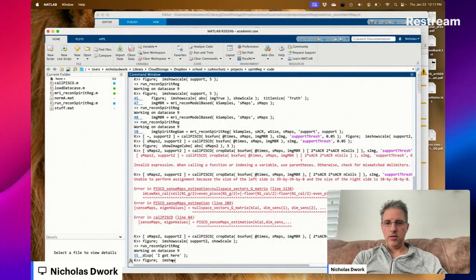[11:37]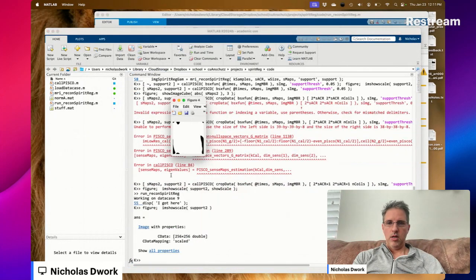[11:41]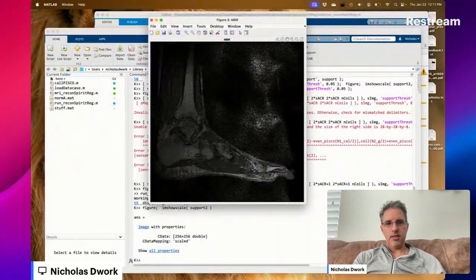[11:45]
Now my question is, so what's happening here is that we're doing a reconstruction. We're looking at the model-based reconstruction. And now this is interpolating missing Fourier data, right? Well, okay, and I think this FFT2 was the issue before. So let's send all the data into PISCO for the second run. That's the result of model-based reconstruction. Now what's the support 2? Okay, that's really bad, but you see all this noise? Is that the reason why?
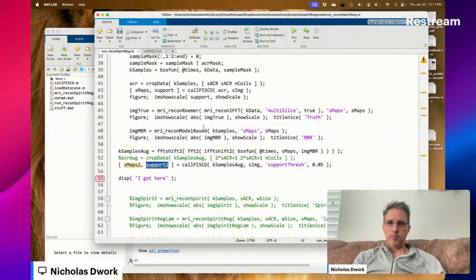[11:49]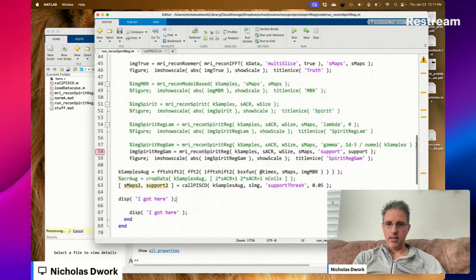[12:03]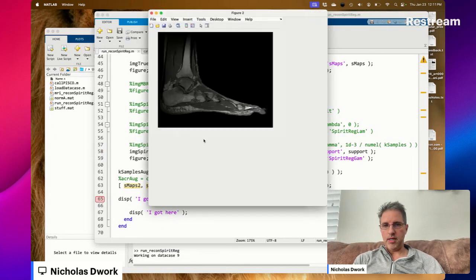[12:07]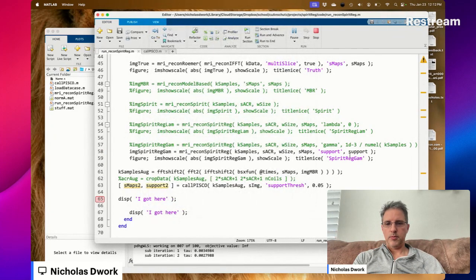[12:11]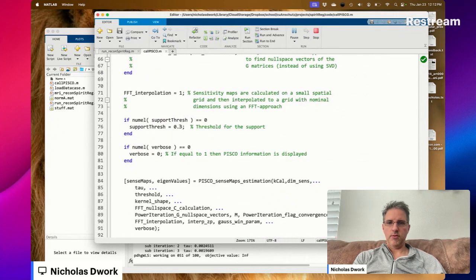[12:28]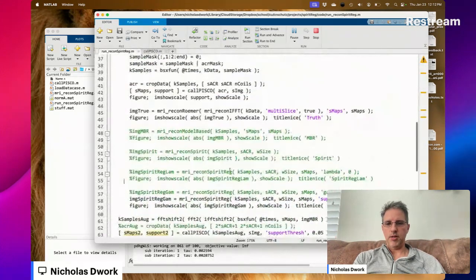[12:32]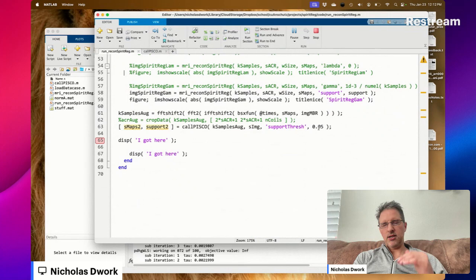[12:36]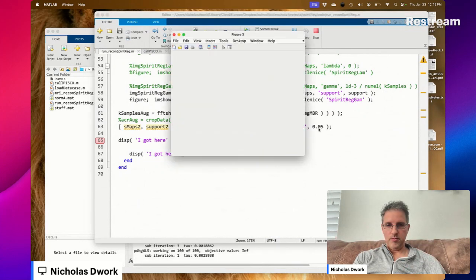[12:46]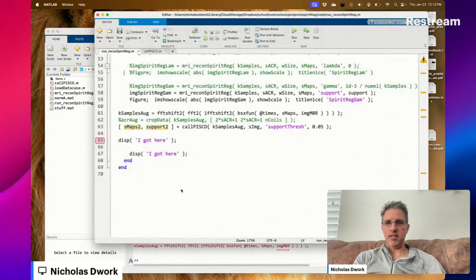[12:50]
So we're going to move this. We're not going to do model-based reconstruction. We're going to do recon SPIRiT reg, which hopefully gives a better answer than model-based reconstruction. So the default threshold value for support thresh is 0.3. I'm reducing it a lot, which I think reduces the percentage of eigenvalues that are retained or something. Image MBR doesn't exist.
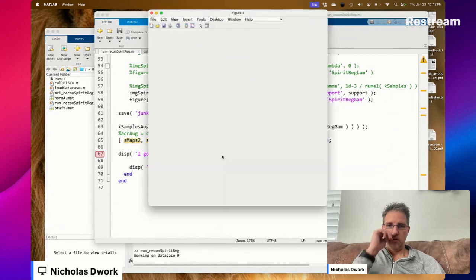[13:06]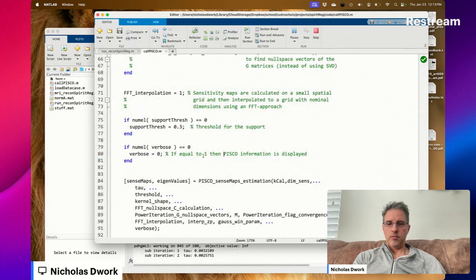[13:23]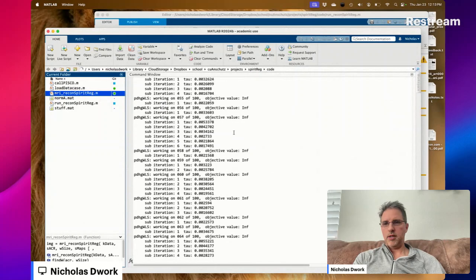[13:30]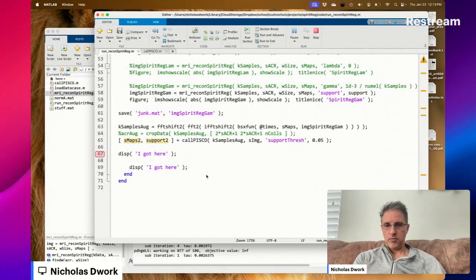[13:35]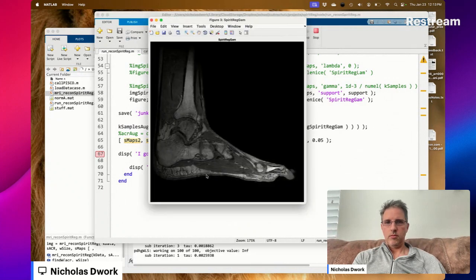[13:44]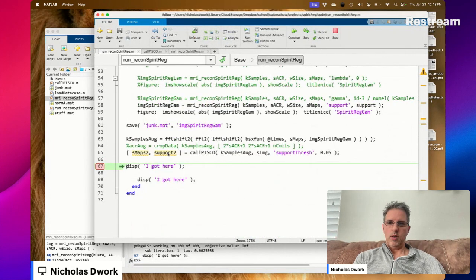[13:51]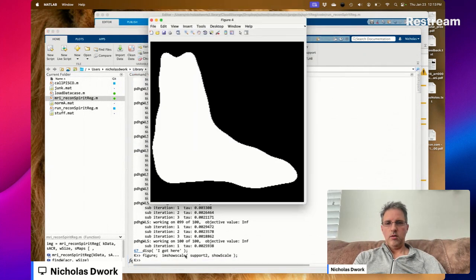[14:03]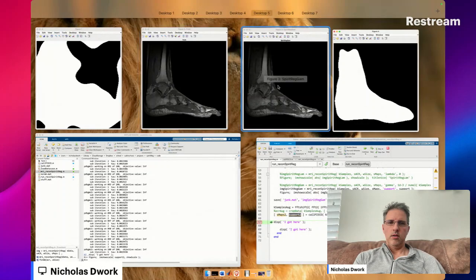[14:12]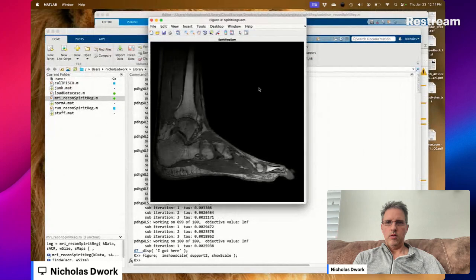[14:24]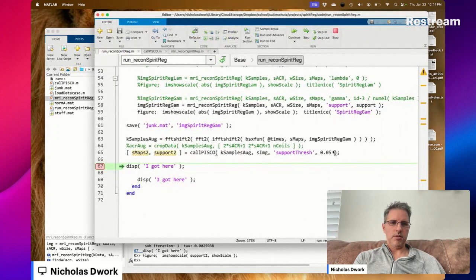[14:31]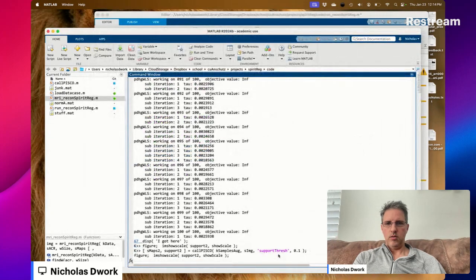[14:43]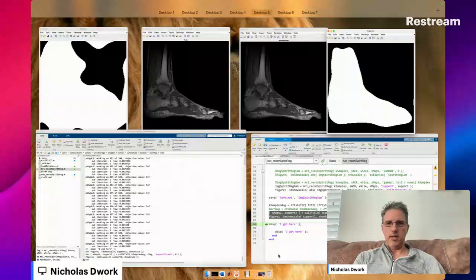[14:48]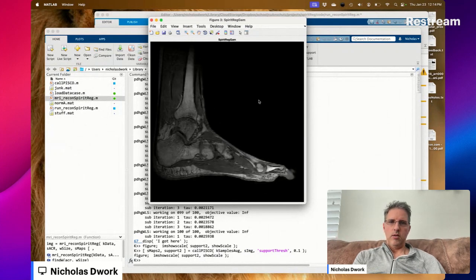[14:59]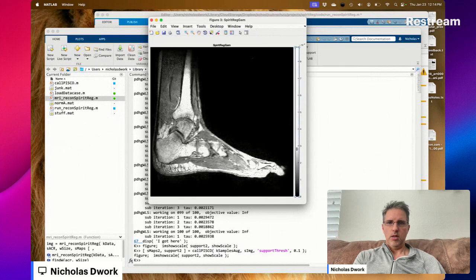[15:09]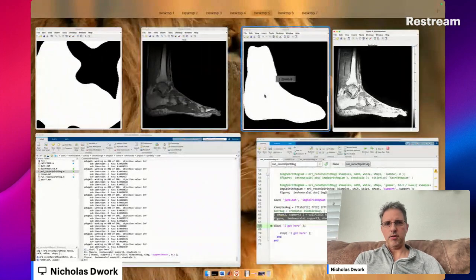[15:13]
We'll open this up so that if we have to run a long time again, we'll start working on compressed sensing. All right, what does that support look like now? Okay. Huh. What if we set the threshold to 0.1? That didn't change much, did it? You see, there is stuff. There is stuff outside of the support, isn't there?
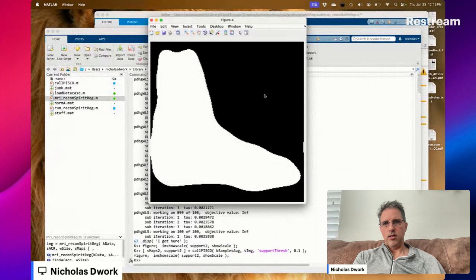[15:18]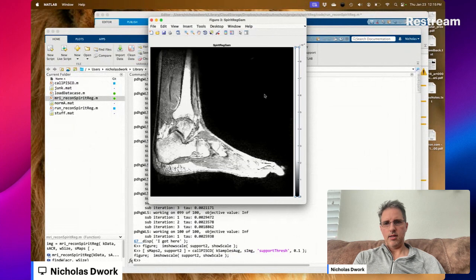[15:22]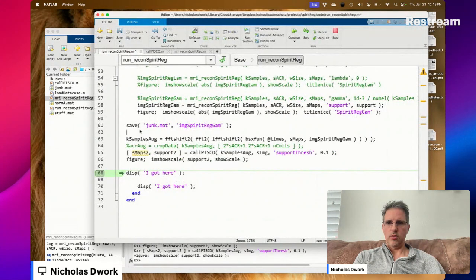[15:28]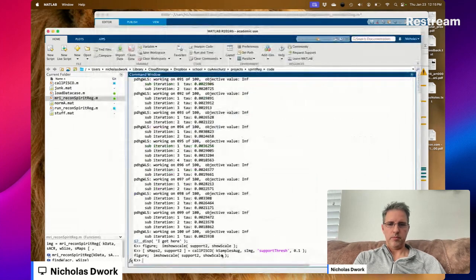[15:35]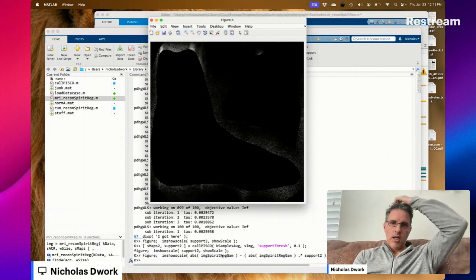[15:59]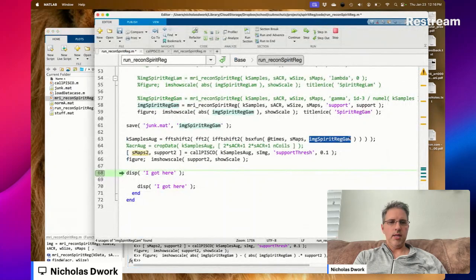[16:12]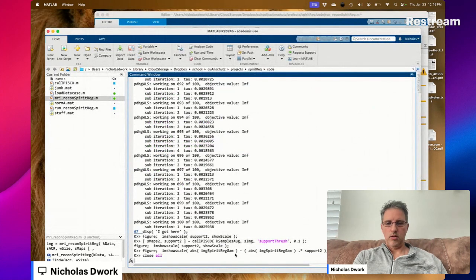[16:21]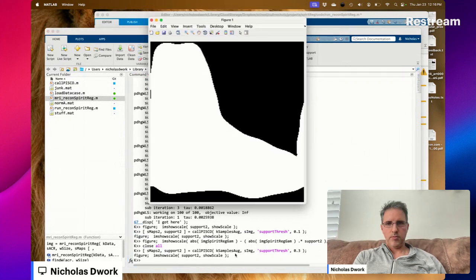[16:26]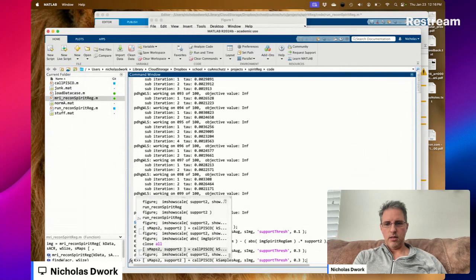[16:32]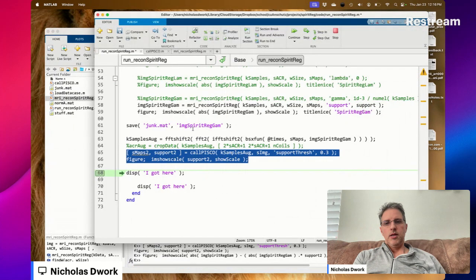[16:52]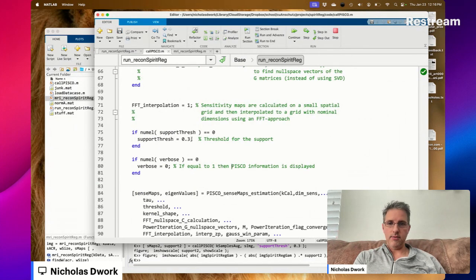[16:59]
I think. So this should just show what's outside of the support. And there is some stuff there. Not much, but some. And what if I set this threshold to 0.3 now? Okay, that's looking promising. Now there's really nothing outside of that support, is there? Okay. So it turns out I like the threshold of 0.3. I think that's the default threshold that I have.
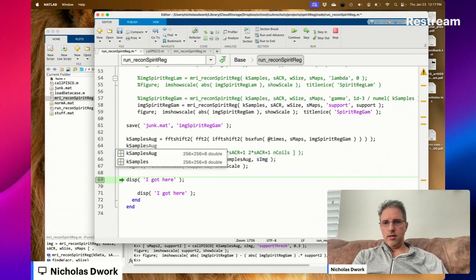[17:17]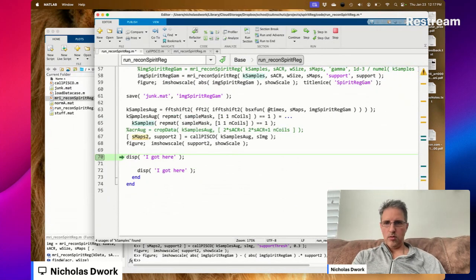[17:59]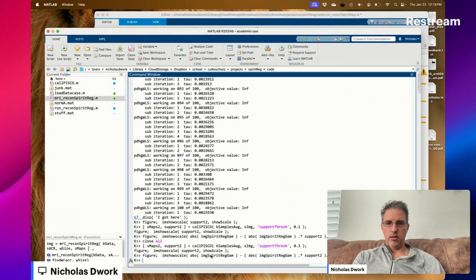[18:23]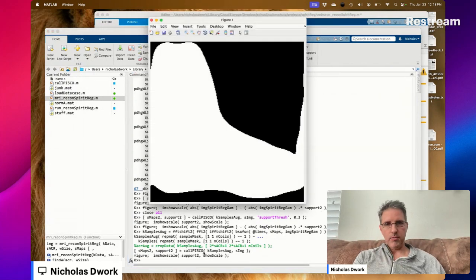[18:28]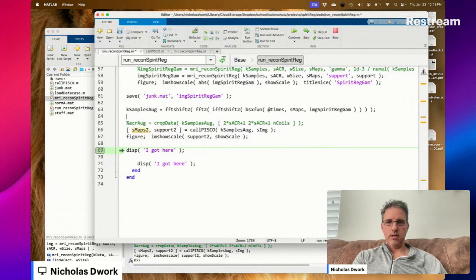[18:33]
We can even set our sample mask equal to 1 where k data, or where k samples. What's the size of sample mask? It's just two-dimensional. Okay. So this is me replacing, like, it could be the case that, well, we have a data consistency constraint, don't we? Yeah, I don't know that that's a good idea. Maybe it is. Let's find out. Same. Yeah, same. I think that's because of the data consistency constraint. We don't need to do this.
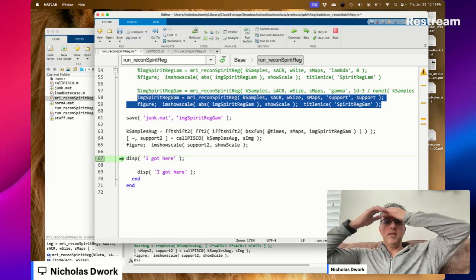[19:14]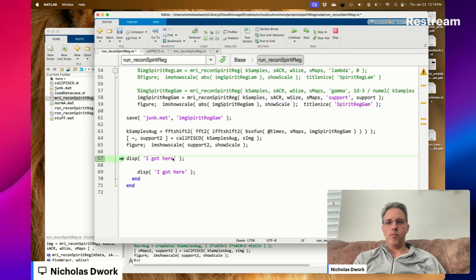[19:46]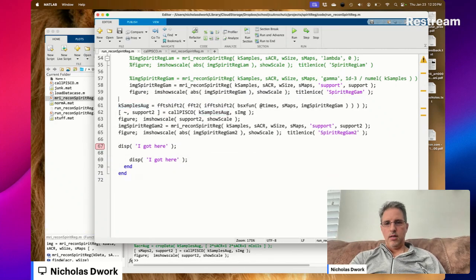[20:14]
So we've got these augmented data, or these are the original, the estimated Fourier values at all frequencies. We can call PISCO on that. We don't need those sensitivity maps. It gives us a new support. And then I'm thinking we can run this again. You see. And that should do better. This is basically made possible because PISCO is so fast. Let's see what the difference is between these two reconstructions.
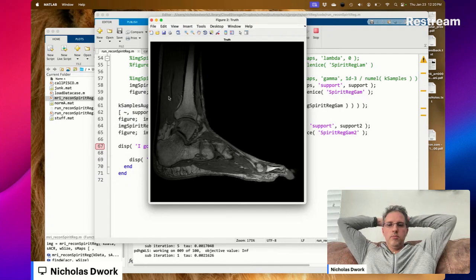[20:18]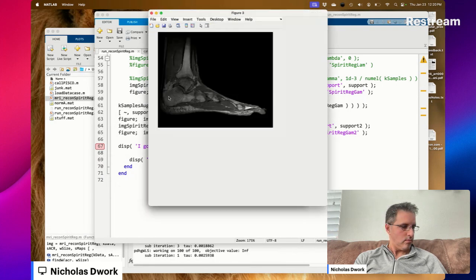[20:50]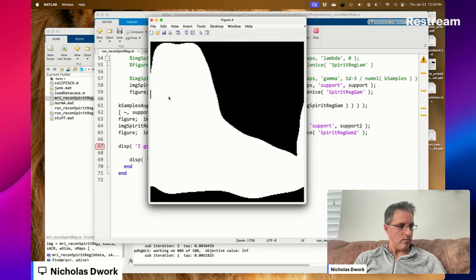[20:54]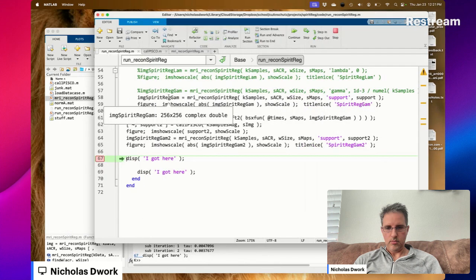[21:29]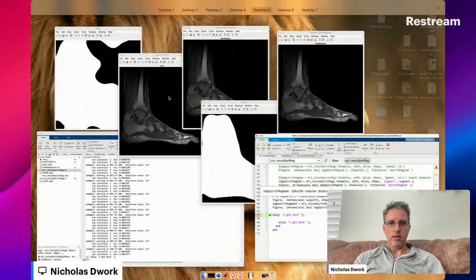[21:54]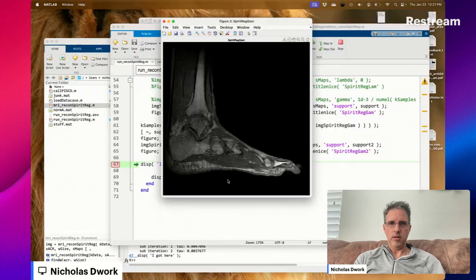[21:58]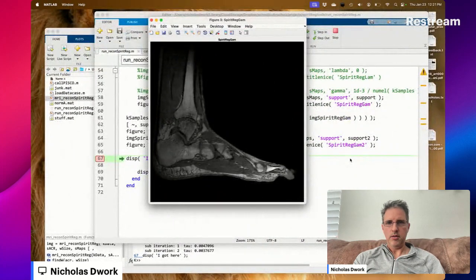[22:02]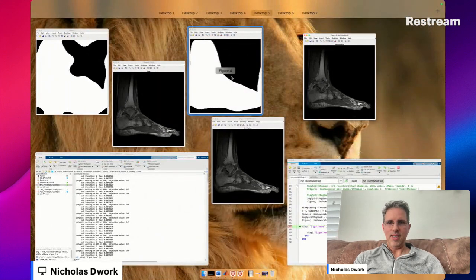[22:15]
How do they look? This is Spirit Gam. This is Spirit Gam 2. Spirit Gam looks better, I think. Now, why is that?
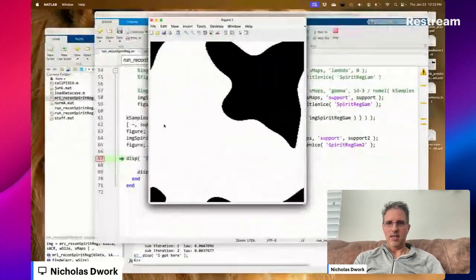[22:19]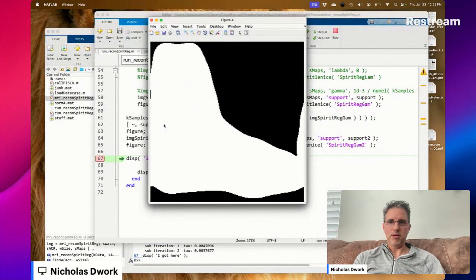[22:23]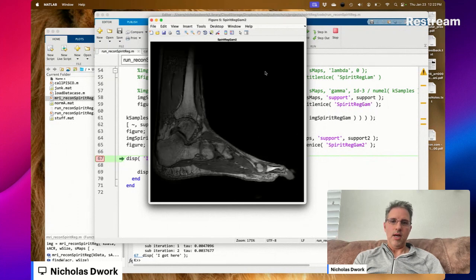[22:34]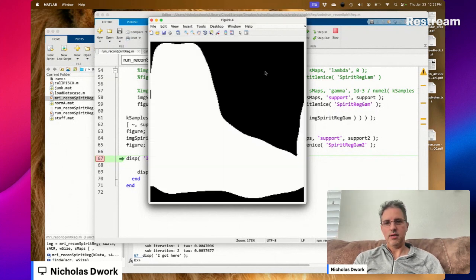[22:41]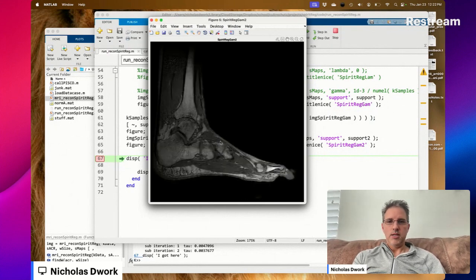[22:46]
The estimate of the support is much better, I would say. Oh, but it doesn't actually go to the top. Maybe there's something there. I would say the estimate of the support is better. And good. I would say it's very good. And the only difference between Spirit Gam and Spirit Gam 2 is the estimate of the support.
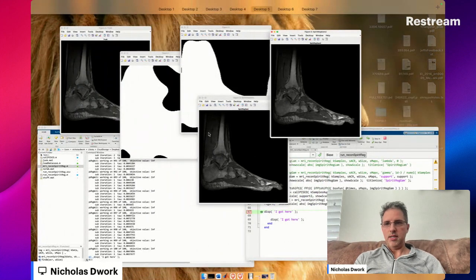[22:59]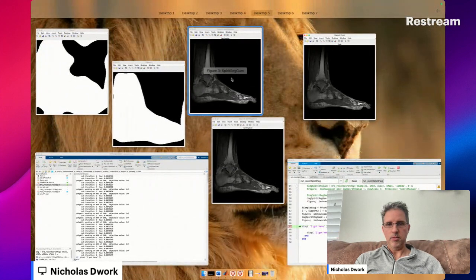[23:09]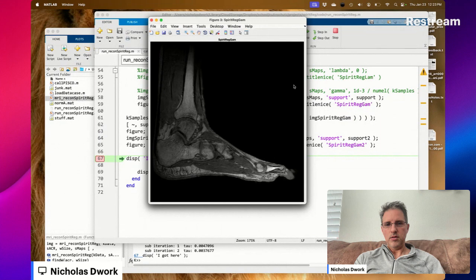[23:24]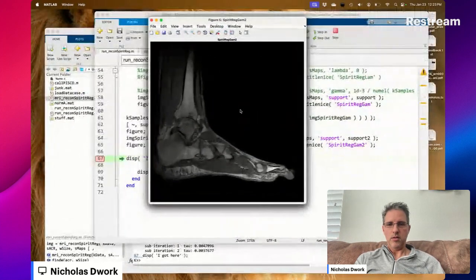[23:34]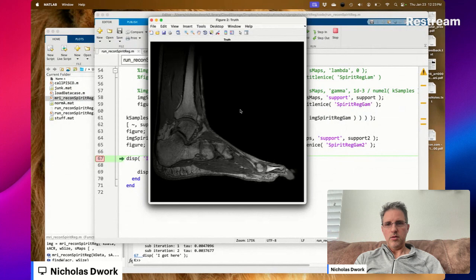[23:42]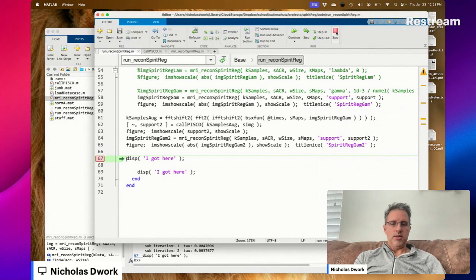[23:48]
Now here's a question. Am I right that it's better? So that's very noisy in this area, Spirit Gam 2. How about Spirit Gam? Yeah, Spirit Gam is better. Why is that? That's strange.
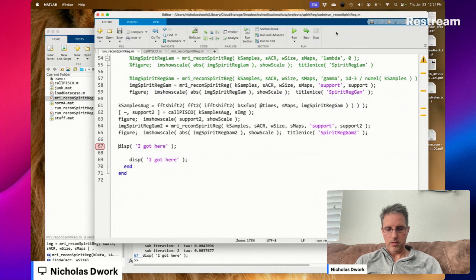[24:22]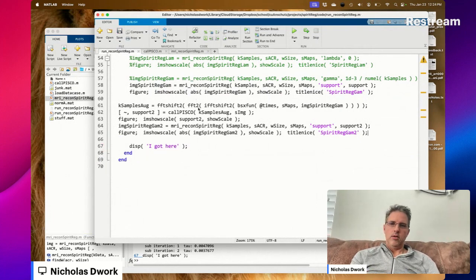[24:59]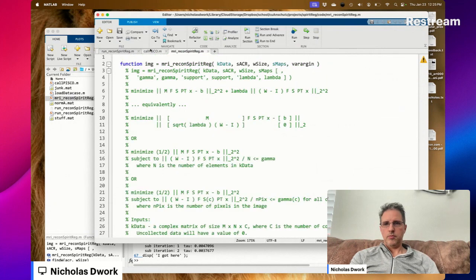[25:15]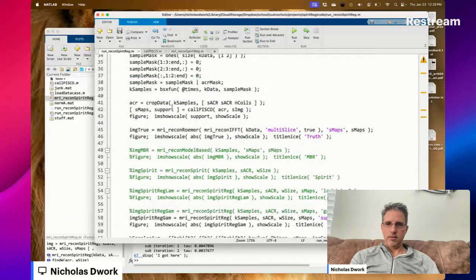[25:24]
I got here and I got here. That's good to know. We'll keep this around. Maybe something will resolve and this will start to work out. I made the threshold 0.4. Let's see how that goes.
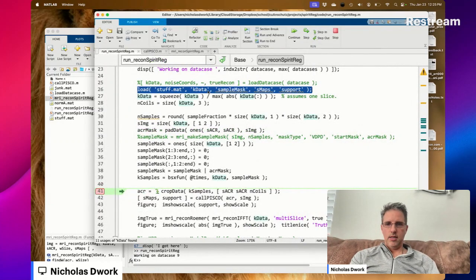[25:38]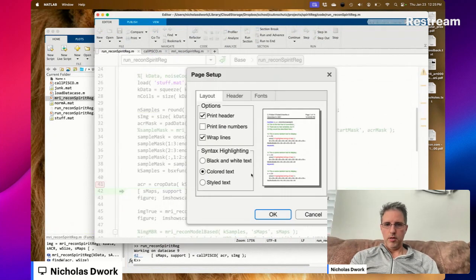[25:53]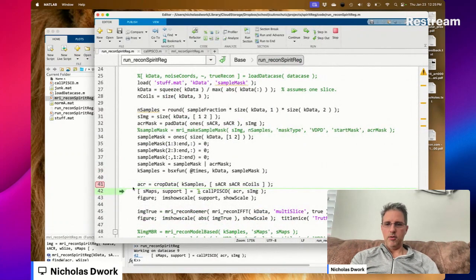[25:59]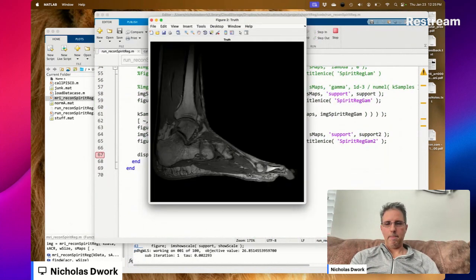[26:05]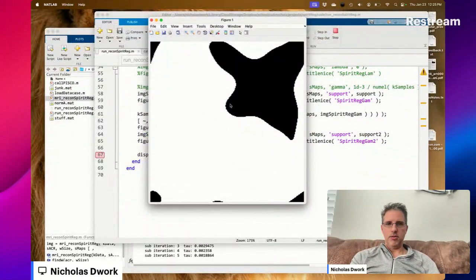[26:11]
Right now I'm storing SMAPs and support, but I don't have to because PISCO goes just so fast, especially when we're just using the auto calibration region. Watch. Oh, that didn't. Okay, let's do it again. Watch. Boom. Oh, that was the ACR. Boom. It goes so fast. So now the support's very large.
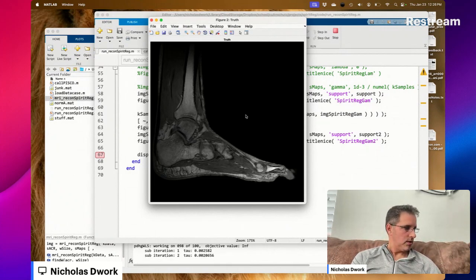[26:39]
We'll have to see if this is the threshold that we like in the end, whether it even benefits other anatomies, like the brain. Does it actually reduce the overall image or not? Is the support a strict subset of the field of view or not? And if so, by how much? Enough to matter?
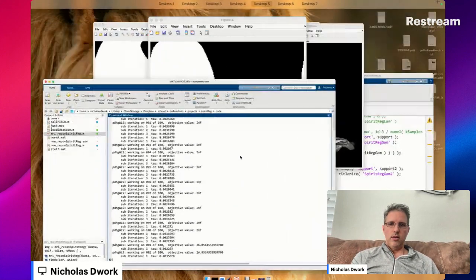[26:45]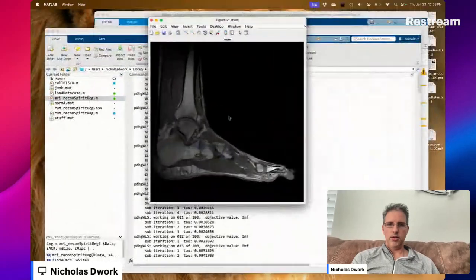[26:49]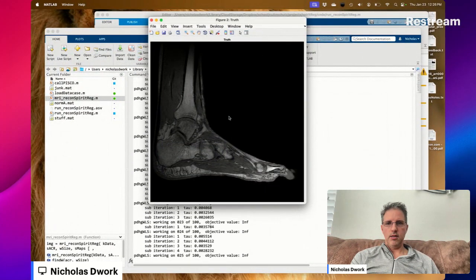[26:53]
Spirit gamma, truth. It's noisier. That's pretty good. I'd say that's real good. They're not great. This is 1/6 of the data or something. Not a whole lot of data to work with. It's kind of a miracle it performs this well.
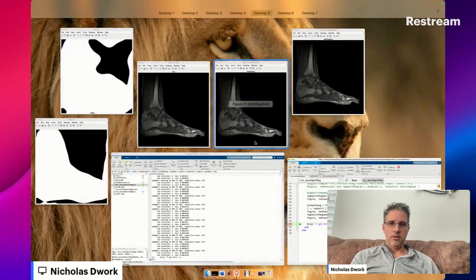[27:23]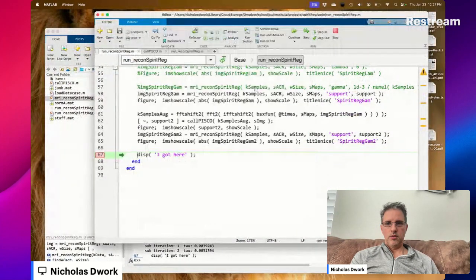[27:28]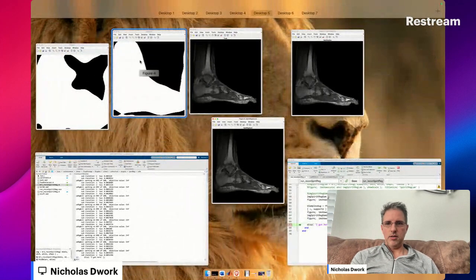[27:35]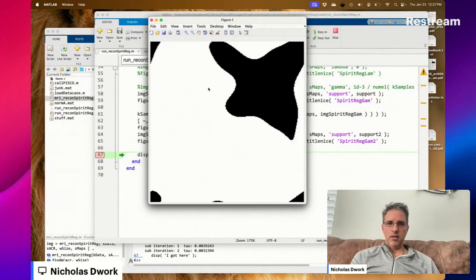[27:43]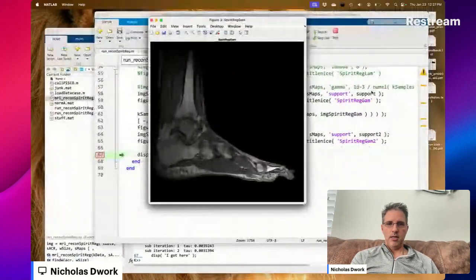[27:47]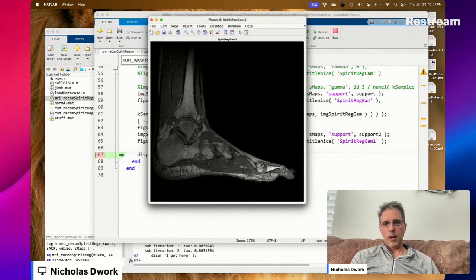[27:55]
Here's gamma 2. That's interesting. So what's support 2? Support 2. So the support's much smaller, and I like that support. Here's spirit gamma. Here's spirit gamma 2. Spirit gamma's a little better. That's so strange.
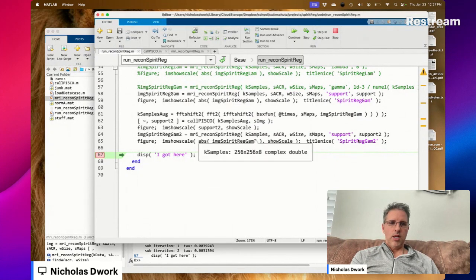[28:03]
The only difference between the call to recon spirit reg that generates spirit gam and spirit gam 2 is the support. That's the only thing that's different. Everything else is the same. We don't overwrite the S maps. W size is the same. SACR is the same. K samples is the same.
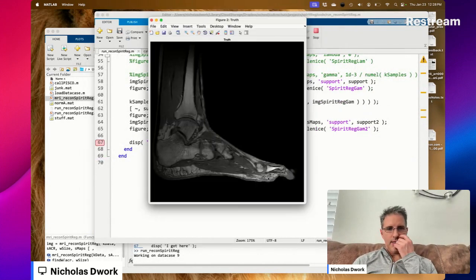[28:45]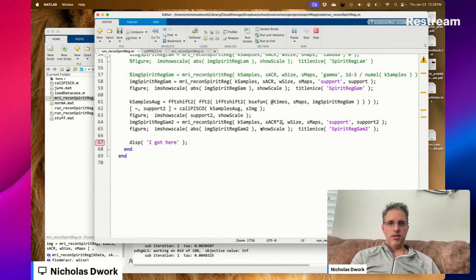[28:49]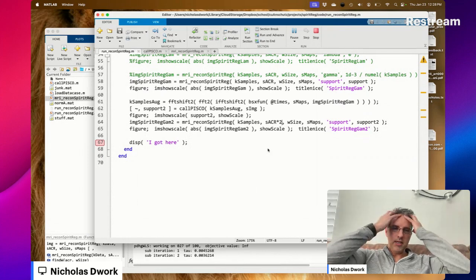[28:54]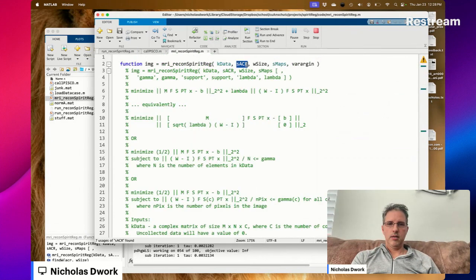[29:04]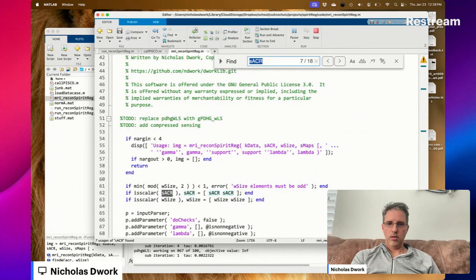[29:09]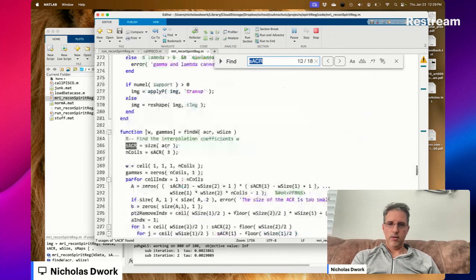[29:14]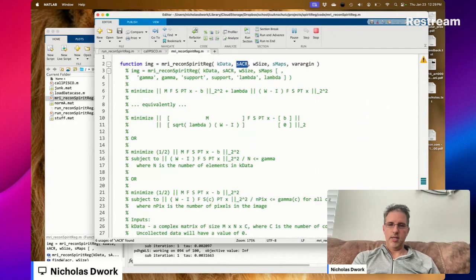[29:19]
As long as we're hacking and tinkering, let's see what happens if we just use twice the ACR after the first reconstruction. But of course, now there are two differences. What is the ACR used for in Spirit Reg? Find W. Okay, that's all it's used for. It's find W.
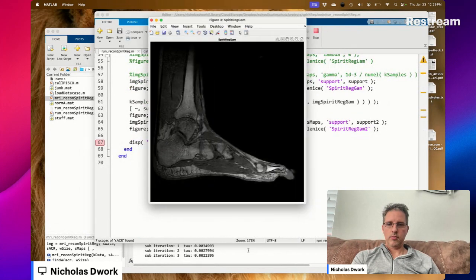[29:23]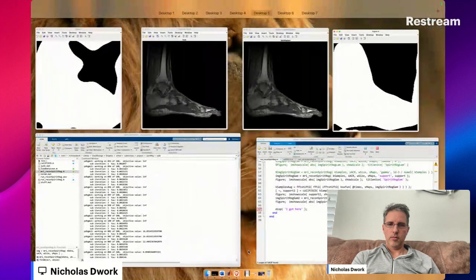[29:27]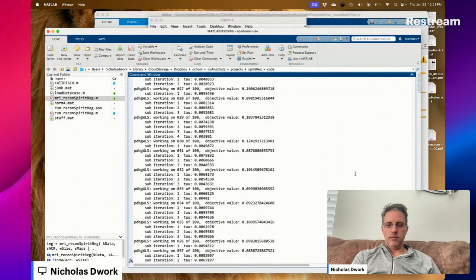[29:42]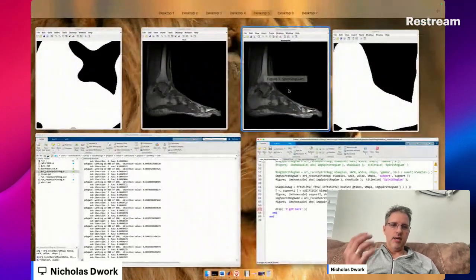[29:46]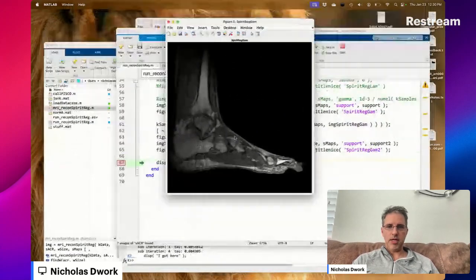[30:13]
This support is much less than this. And it seems much better. So everything tells me, since we're giving it more information, there's more of a restriction. We only reconstruct the image where the support is white. Since we have to reconstruct less of an area here than over here, and we have the same amount of data, it seems like we should just get a better image out. I'm very surprised that we don't.
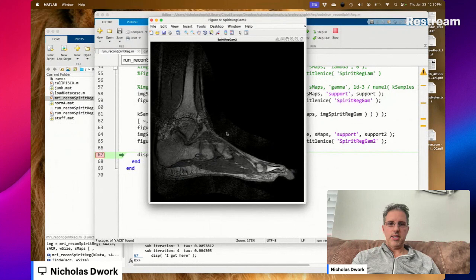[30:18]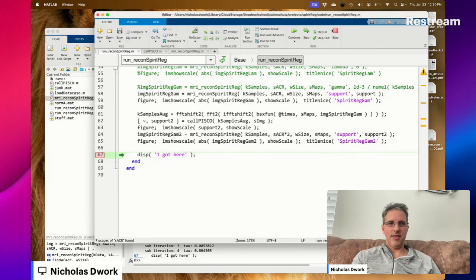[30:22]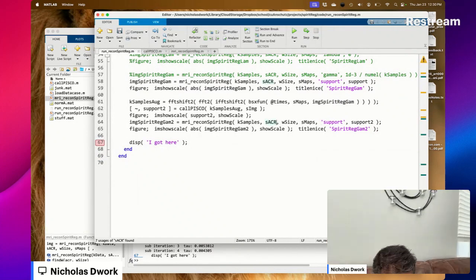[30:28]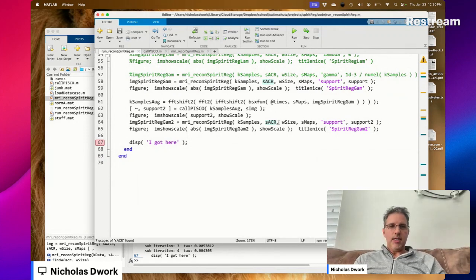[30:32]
Now in this case, we used twice the ACR, which was a total hack, and that turned out to be a terrible idea. So let's not do that. Well, that didn't work as I had hoped. This is FSX. I'm not sure why it didn't work. I'm going to have to stew on that a while.
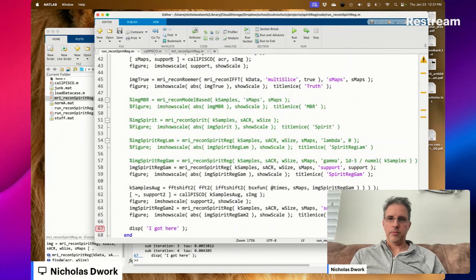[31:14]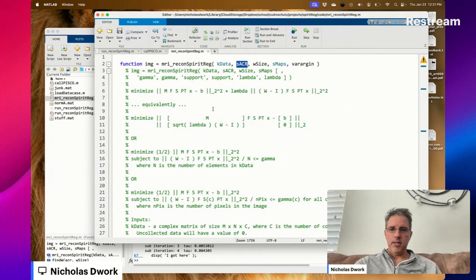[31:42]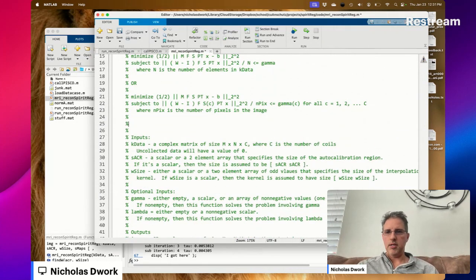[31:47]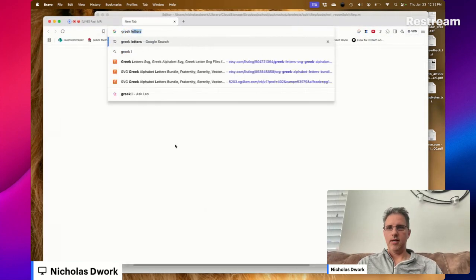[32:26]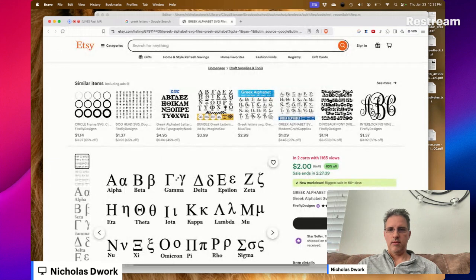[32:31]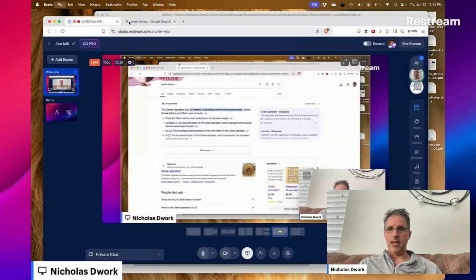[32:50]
Okay, now let's try some compressed sensing. So the problem we're going to solve is, what should we call this? We got any Greek letters left? Beta? Zeta? Phi? Rho? Lots of Greek letters left. Okay, we're going to go with zeta.
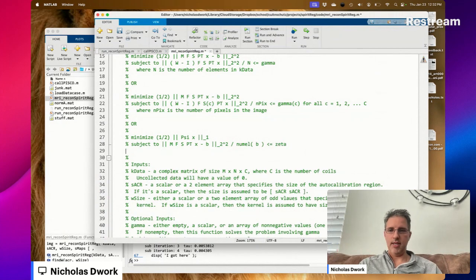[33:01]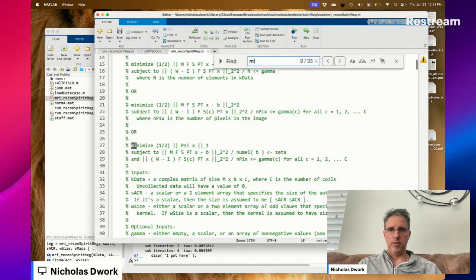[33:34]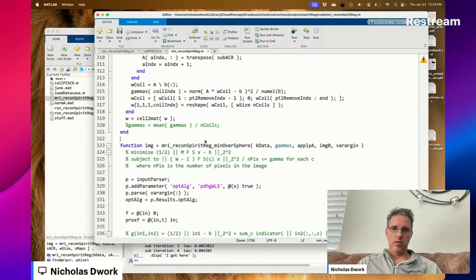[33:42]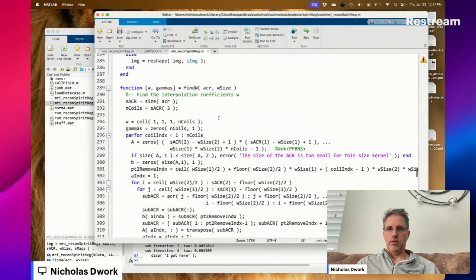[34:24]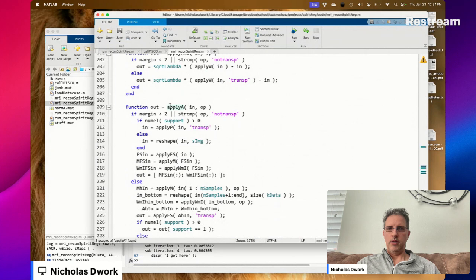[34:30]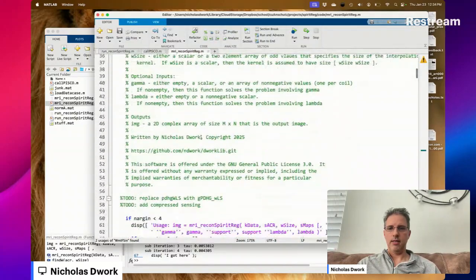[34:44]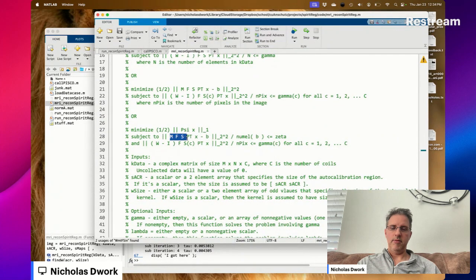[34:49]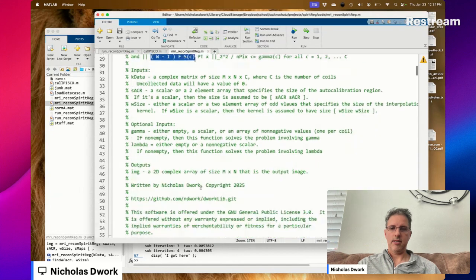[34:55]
So if you supply zeta, nope, because we're going to calculate zeta. And the SPIRiT regularization. Oh boy. We're getting an A passed in here. FS, MFS, WMIFS. So A does MFS and WMIFS, which we're going to need, right? We're going to need MFS PT W minus IFS.
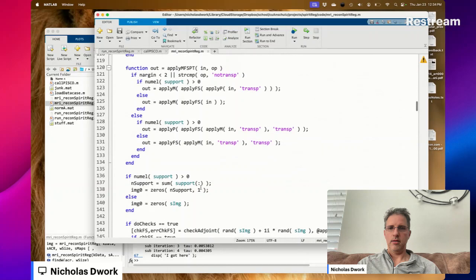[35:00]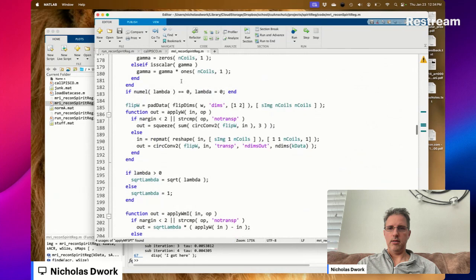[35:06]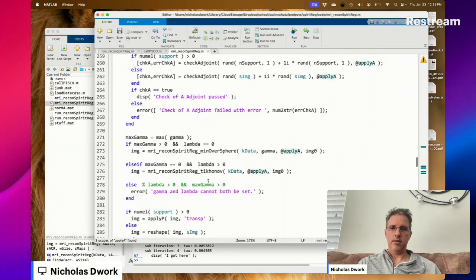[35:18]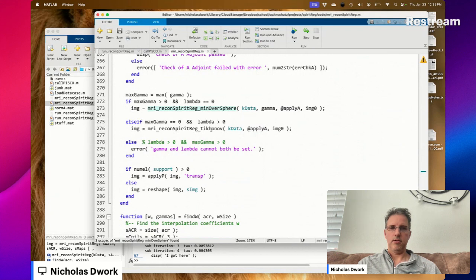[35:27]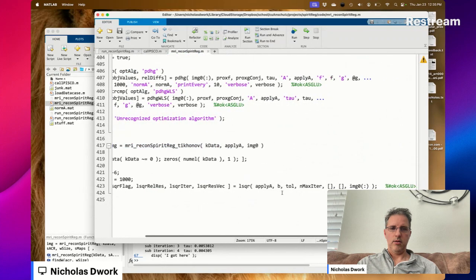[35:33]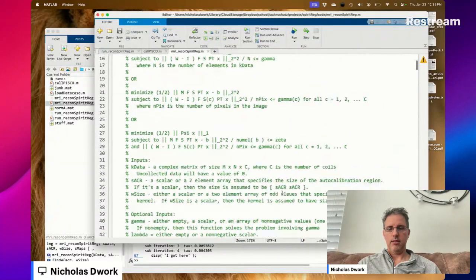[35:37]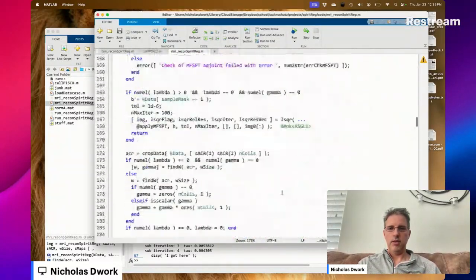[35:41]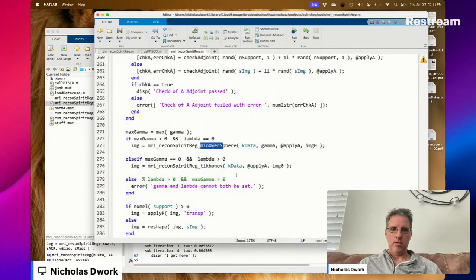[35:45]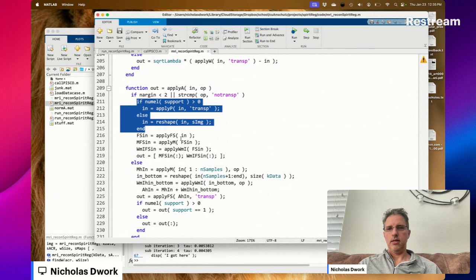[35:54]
Now here's a question. And apply A. Where is it? Where does apply A get used? Right now it gets used at minimization over a sphere in Tikhonov. So for Tikhonov, where's the P? Right? That's what I'm wondering. Does apply A have P in it? Oh, okay, yes. I see.
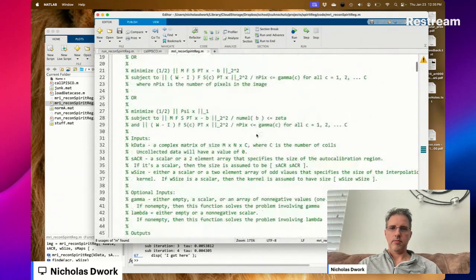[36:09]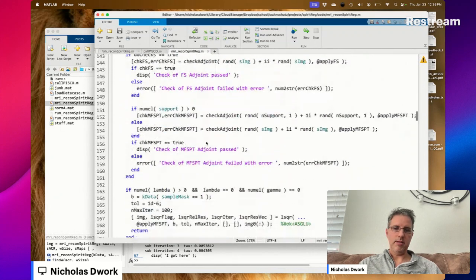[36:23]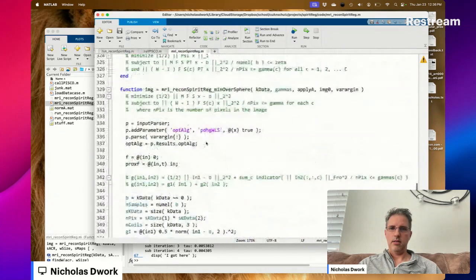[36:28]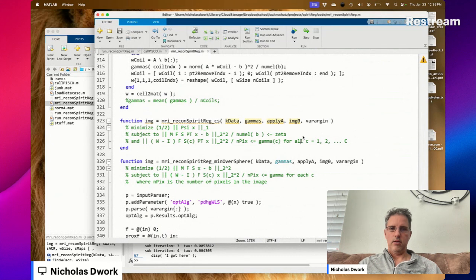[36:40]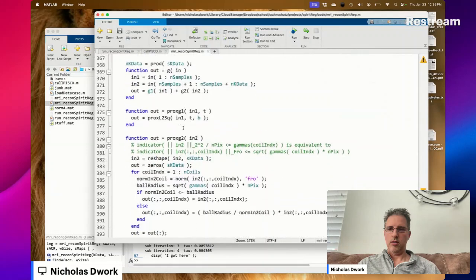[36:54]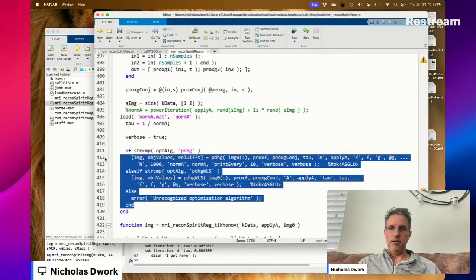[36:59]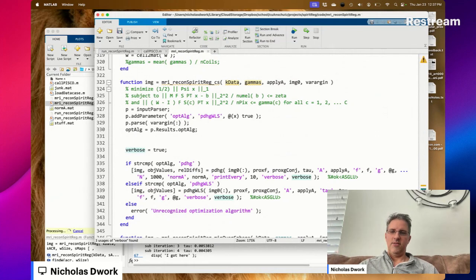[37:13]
Okay. We're going to need that, and we're going to need that. And we're also going to need that for this one. So we're going to keep A, and it's going to be defined just how it is. We will also use some form of PDHG to solve this problem. And so we can even copy this code here. All right, we got the start, we got the end.
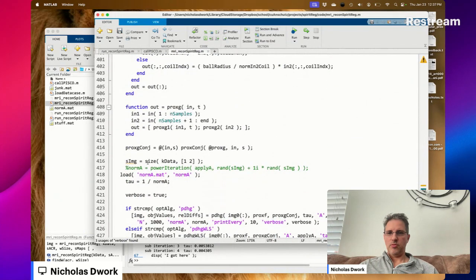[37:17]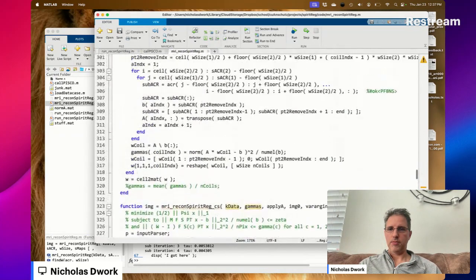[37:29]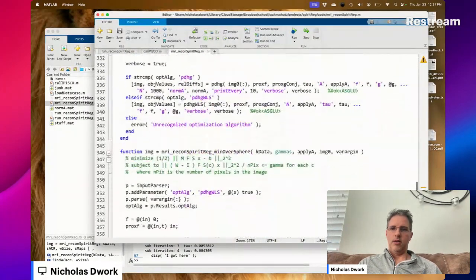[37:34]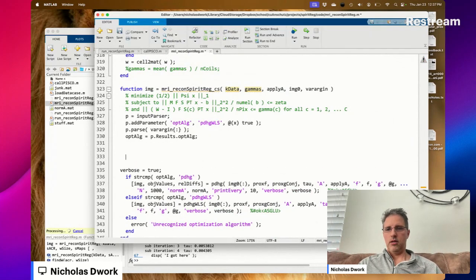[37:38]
Now, if we just had these lines in the middle of the code, we would be done. Okay. Where's B? K data.
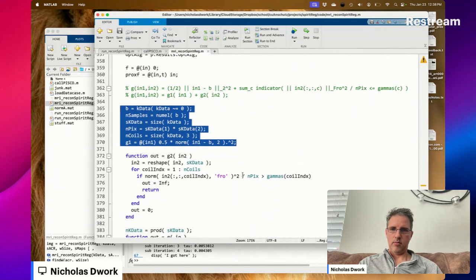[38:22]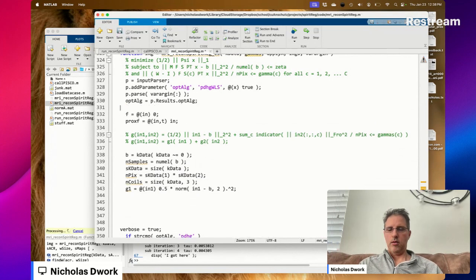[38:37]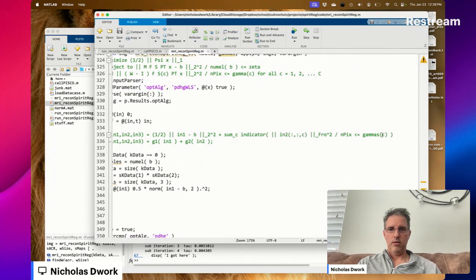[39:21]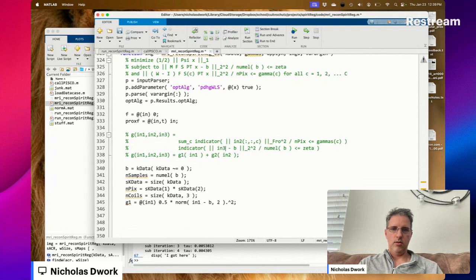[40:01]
Okay, so this is going to be the third function. Indicator that divided by numel b is less or equal to zeta. So we've got this, that's here. We've got this, that's here. The last part is this. We don't use the 1/2 with the psi. Okay, norm.
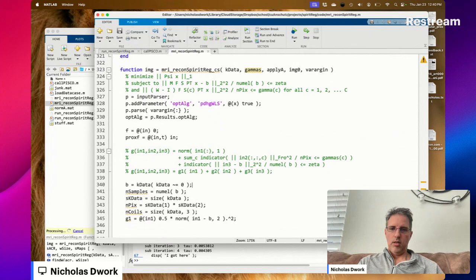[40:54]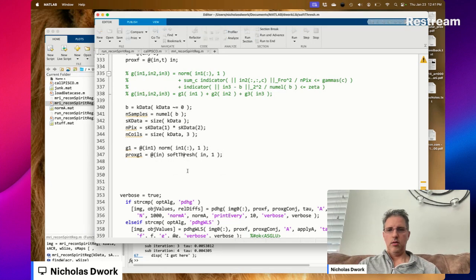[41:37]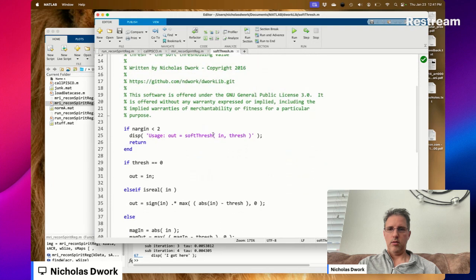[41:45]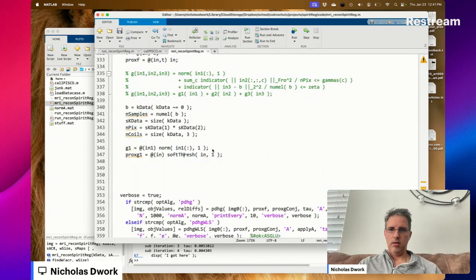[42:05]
If we're going to use that notation, then G1 is different. That's G1. And now the proximal operator is simple. Dead simple. Let's give this a default value for threshold of 1. Now I don't have to provide it there. Okay, so that's G1 and its proximal operator.
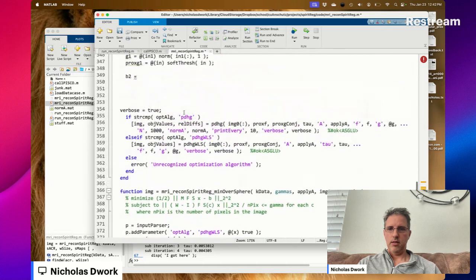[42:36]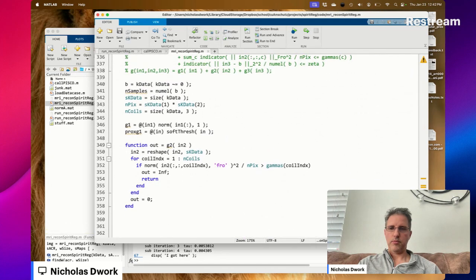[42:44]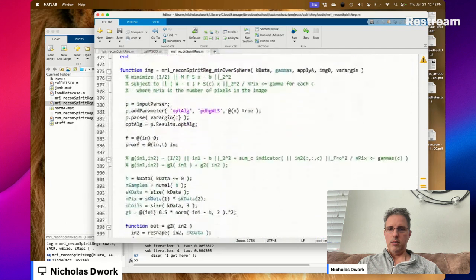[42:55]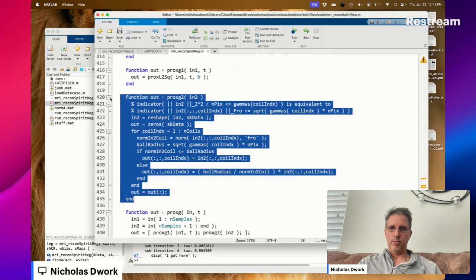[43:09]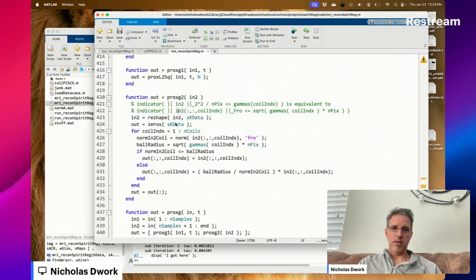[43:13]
Now we need the conjugate. Well, we'll do the conjugate later. G2 is equal to, I think we've already got this somewhere, perhaps a minimization over a sphere. Yep, that looks like G2 to me. Good thing too, because I mislabeled it as B2. Call this NV. Do I have the proximal operator of G2? Sure looks like it. This is a bunch of projections, right? Yep.
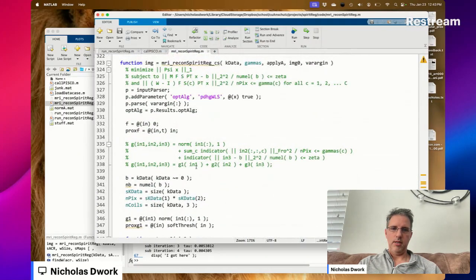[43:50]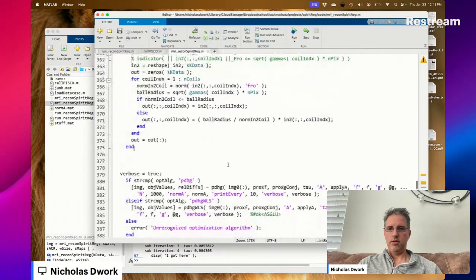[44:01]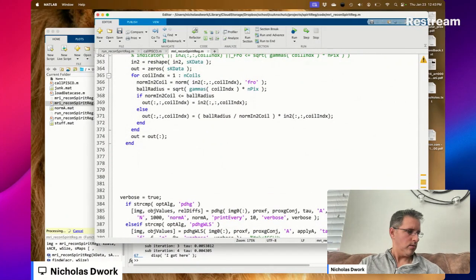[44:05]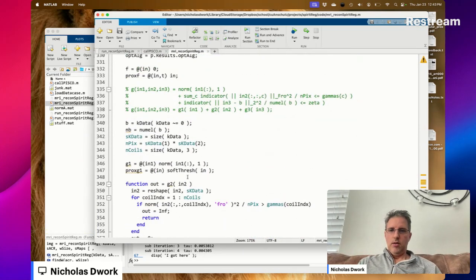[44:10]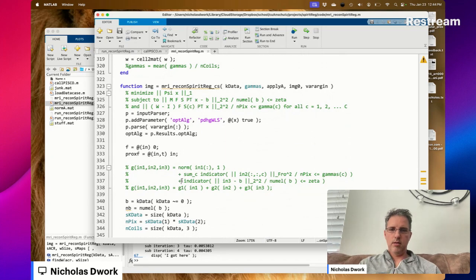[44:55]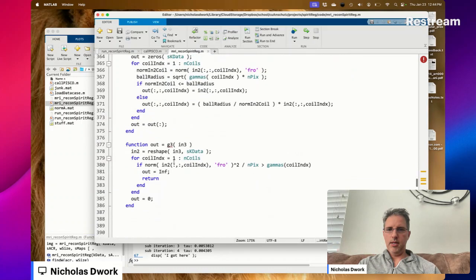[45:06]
Wait a second. Wait, so my G2. Yep. Now I've got G2 and prox G2. Now I need G3. And that one we don't have. Okay, indicator of this. It's going to be a similar indicator function. Wait. These are reversed from this. So this is actually G3. This is G3, and what I'm making here is G2.
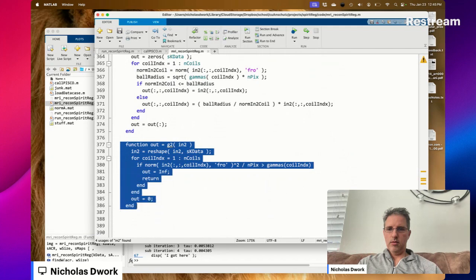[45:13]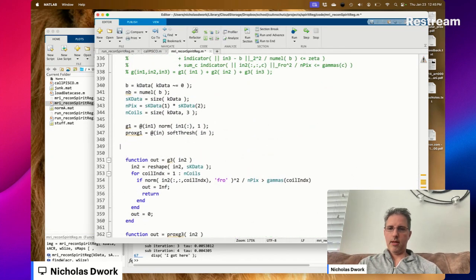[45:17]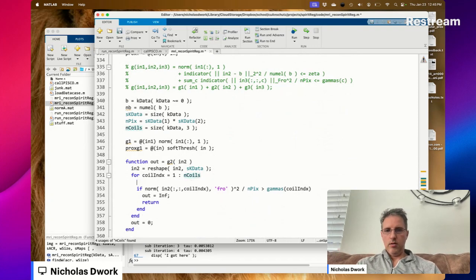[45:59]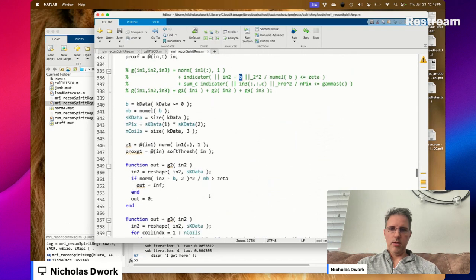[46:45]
Okay. Now this is totally not correct, right? That's G2. Except we don't have to iterate over coils, do we? So we don't need this. in2 minus b, norm squared divided by nb is greater than zeta, out to infinity. Otherwise out is 0, and we don't even need the reshape. So G2 could have been much simpler.
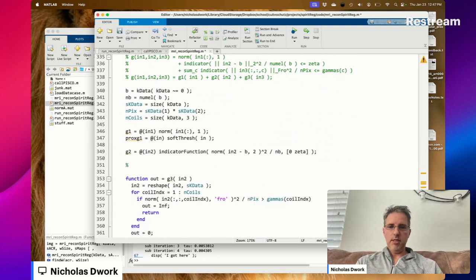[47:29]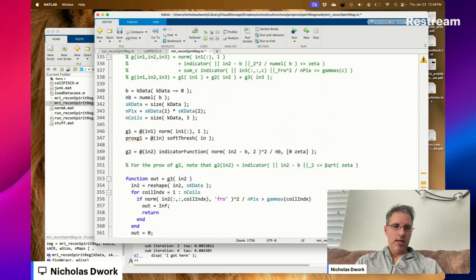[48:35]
Now we need the prox of G2. For the prox of G2, note that G2 of in2 is equal to an indicator of the norm of in2 minus b, less than or equal to square root of zeta. So you know this less than or equal to zeta. Take the square root of both sides. You have the norm not squared divided by the square root of nb is less than or equal to the square root of zeta. And so this is going to be square root of nb times square root of zeta. It's an indicator function for that.
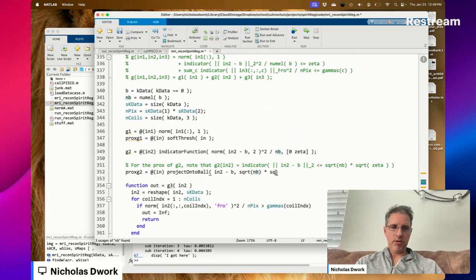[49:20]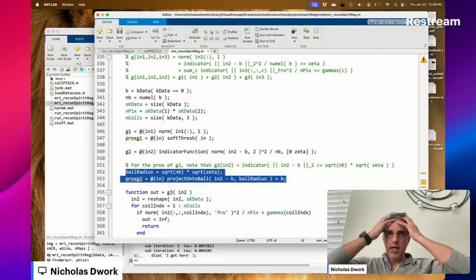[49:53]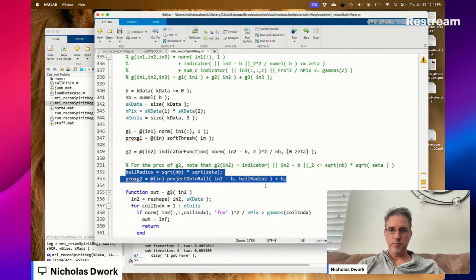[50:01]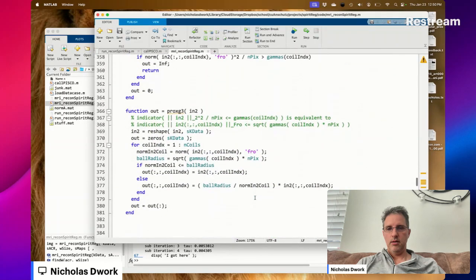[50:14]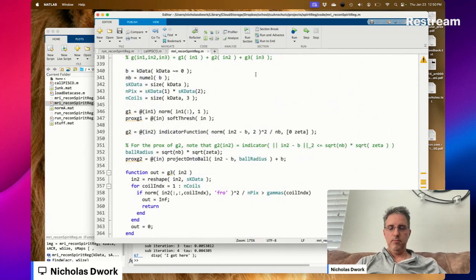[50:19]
Why does that matter? Because now I know that I just need to project its argument onto a ball. Prox G2 at in: project onto a ball, in2 minus b, a ball of radius square root of nb times square root of zeta, and then add b after. I'm going to call this ball radius. If we were doing this once, wouldn't matter, right? But I think this happens every iteration of PDHG, and maybe multiple times in each iteration because of the line search. Okay, I think we've got G2 and prox G2. Oh, there's a ball radius here too, shoot. Call this square root NB square root zeta. Shouldn't be any name conflicts there.
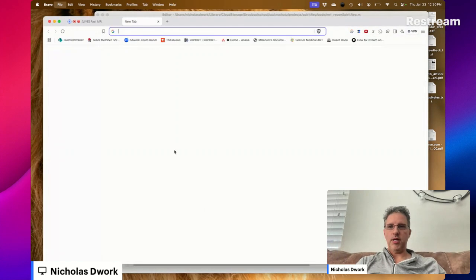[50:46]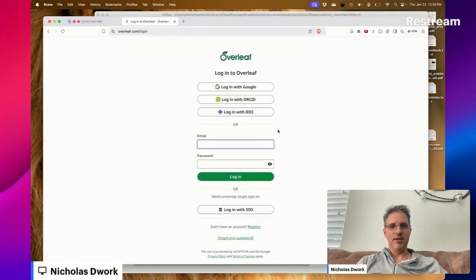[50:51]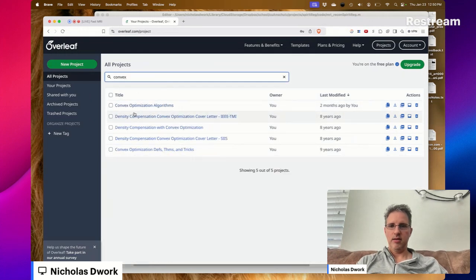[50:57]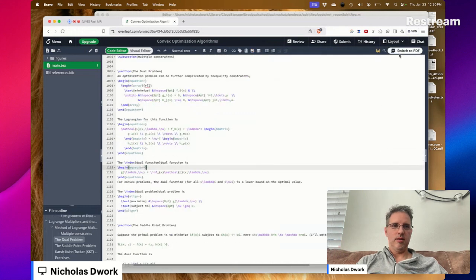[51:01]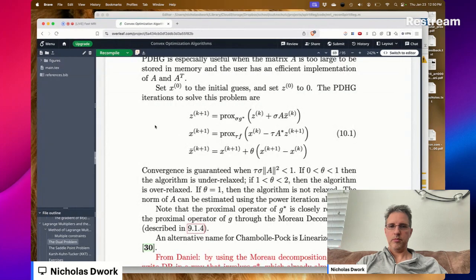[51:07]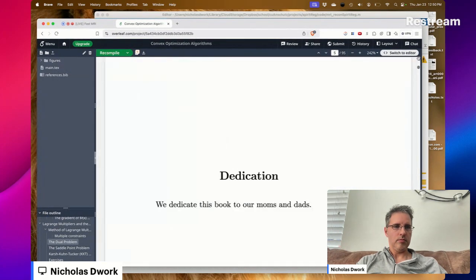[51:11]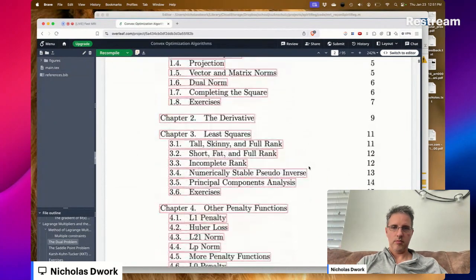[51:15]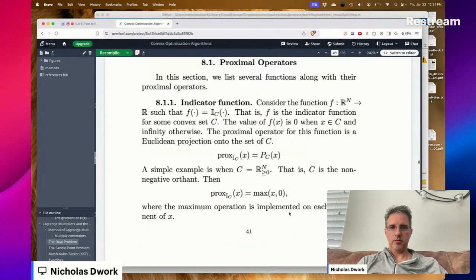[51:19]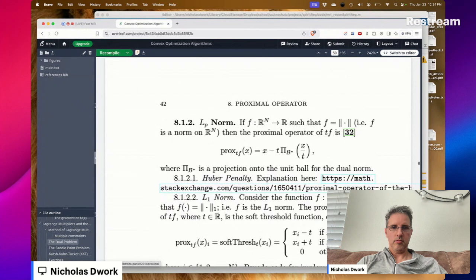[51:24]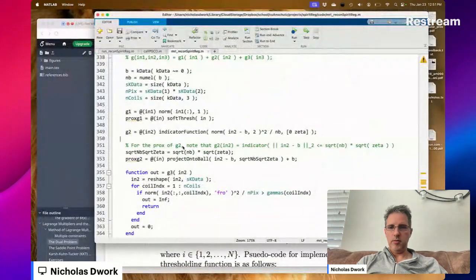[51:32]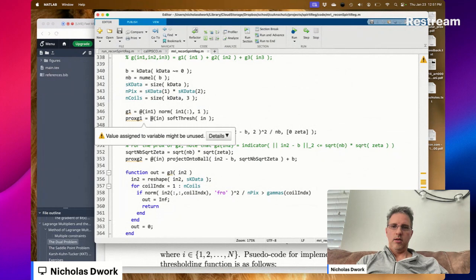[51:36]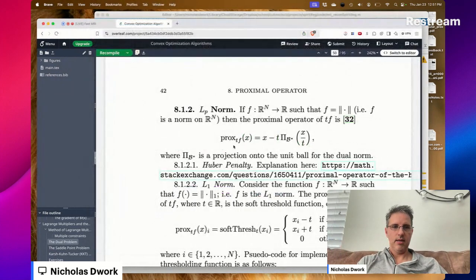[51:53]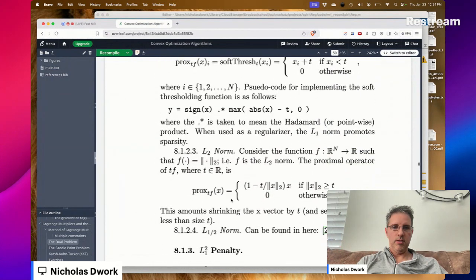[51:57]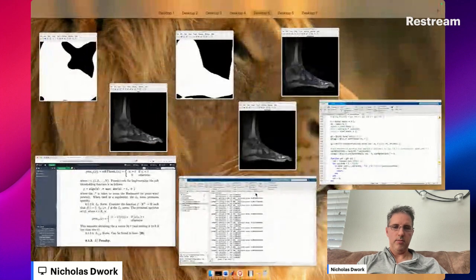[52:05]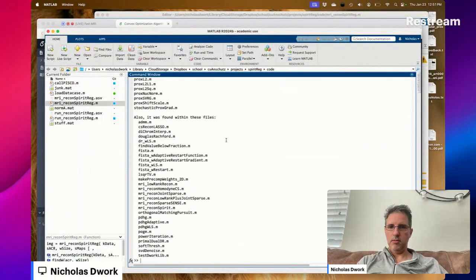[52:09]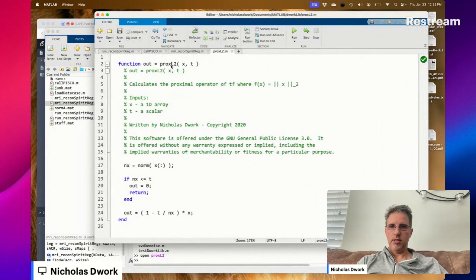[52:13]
Just to be sure, what's the proximal operator of the L2 norm? Oh, I've been making mistakes, haven't I? We need in T, which makes this T. That's fine. Because we don't need the proximal operator of G2, but a scaled G2, scaled by T. So if F is the L2 norm, scaled by T, I'll bet you I got it in fork lib. Prox L2. Sure enough.
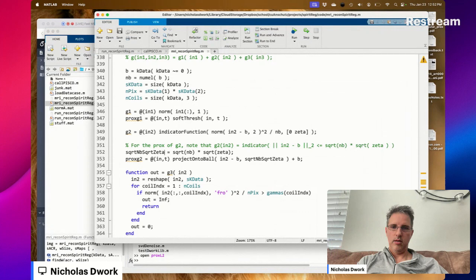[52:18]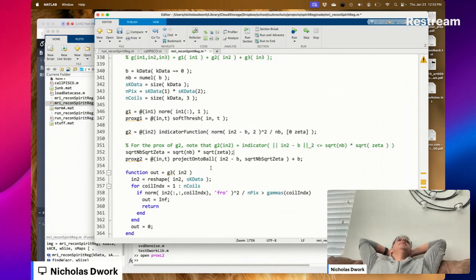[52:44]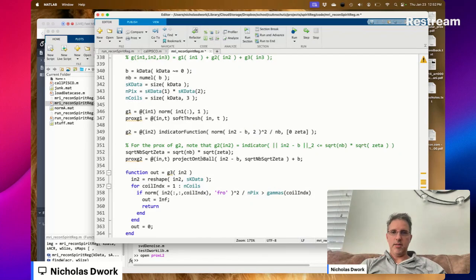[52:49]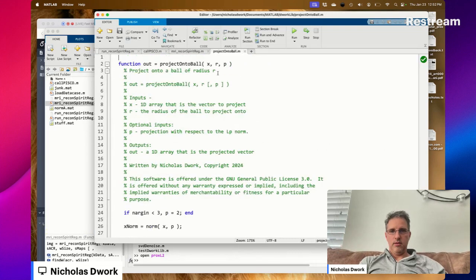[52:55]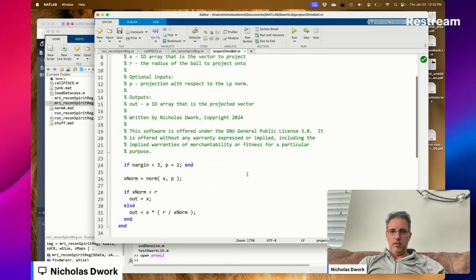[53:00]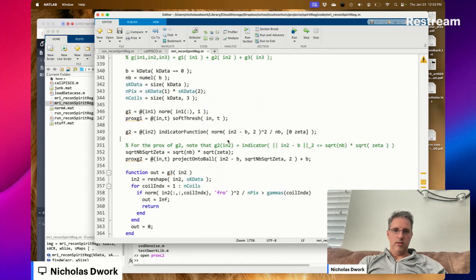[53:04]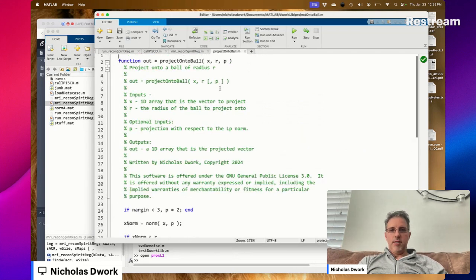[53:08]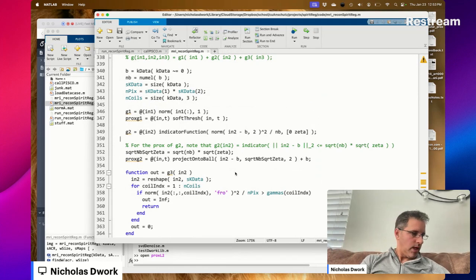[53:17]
Okay. It's not the prox of L2. We've been through this before. It's the proximal operator of the indicator function of an L2 norm. And that is a projection onto a ball, as I've said so many times. Put 2 there, why not? Should I make the default radius for this 1? Okay, we've almost been at an hour.
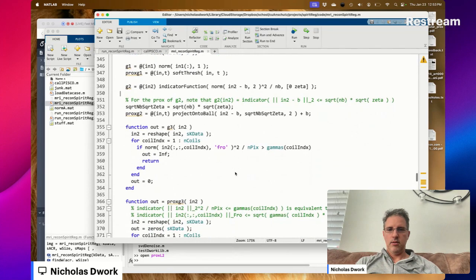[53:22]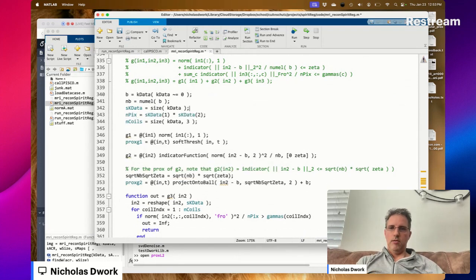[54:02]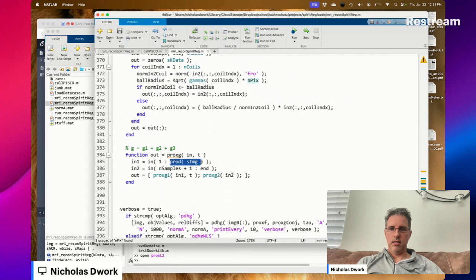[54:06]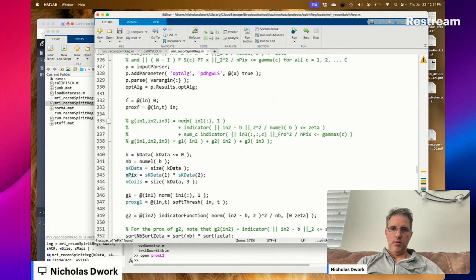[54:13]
Prox G3. Now if we come back down to minimization over sphere, it's prox G1, then we got this prox G thing. Because G is equal to G1 plus G2 plus G3. So prox G, which one's G1? That's a product of S image. Is there an S image in here? No, let's change that. But there is an NPix, and that's really what I need. Right, because G1 is the L1 norm. We take the L1 norm of the pixels in an image, right? G2 is data consistency.
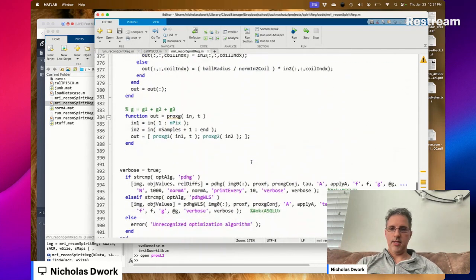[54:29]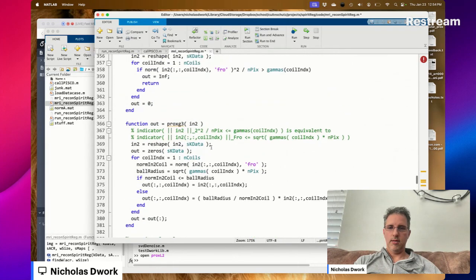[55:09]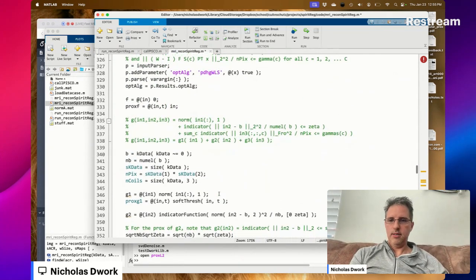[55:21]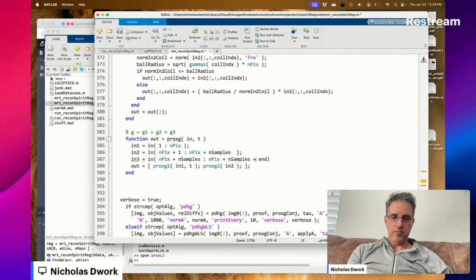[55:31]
So that's going to be n samples. That does not go to end, but it goes to NPix plus n samples. Right. NPix, oh, it's NPix plus 1 to NPix plus n samples. And then in3 is equal to in NPix plus n samples plus, what's G3? NK data. Of course, this could just go to end. Oh, this could just go down. But it would be that plus NK data. Let's do that.
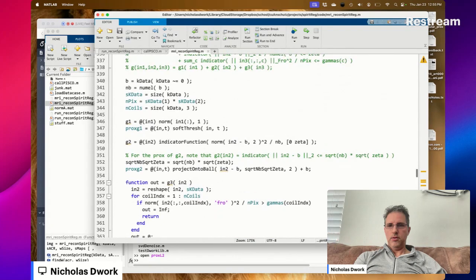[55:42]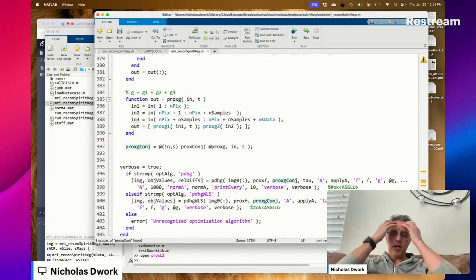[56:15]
Okay. We've got the prox G. We've got prox F. We don't have prox G conjugate, do we? Let's change that. Okay. And we're on our way to implementing a rather sophisticated, well, an addition of compressed sensing.
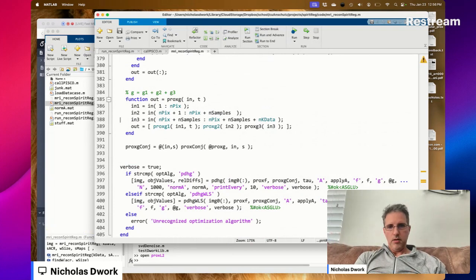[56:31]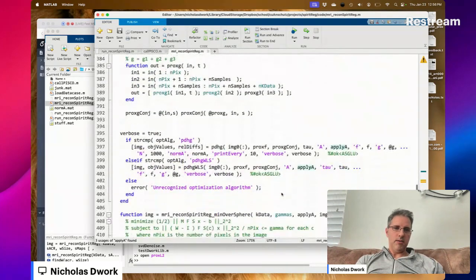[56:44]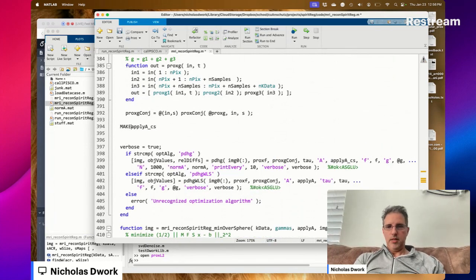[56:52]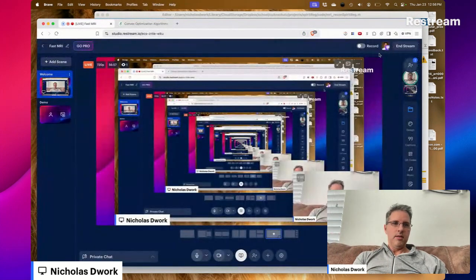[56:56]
I think that's where I'm going to end today. Next time we'll work on this apply A, which isn't the apply the A that comes in here. We're going to need like an apply A CS. So that's what we'll do next time. Thank you for your attention.
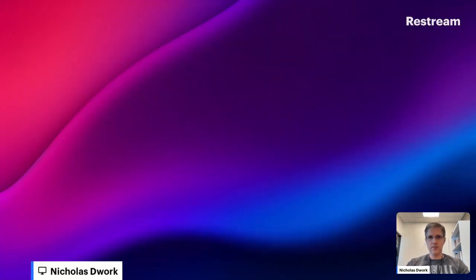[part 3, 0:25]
I did some refactoring of the code off stream. I'm going to show you what I did today, and then we're going to start testing it. All of the refactoring I did is currently untested, and we're going to see what we can do about that. All right. MATLAB's loading now.
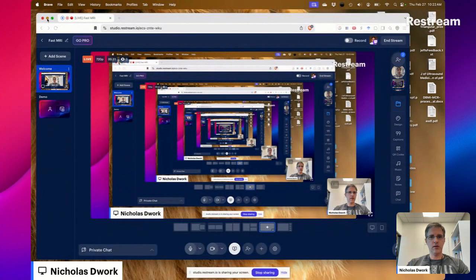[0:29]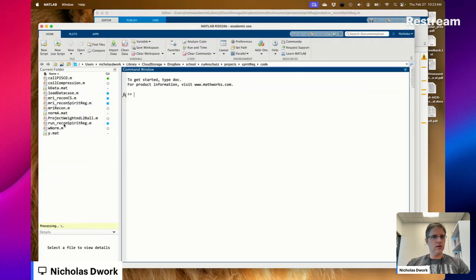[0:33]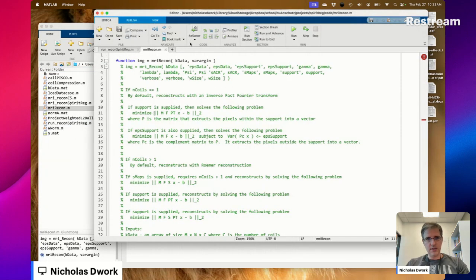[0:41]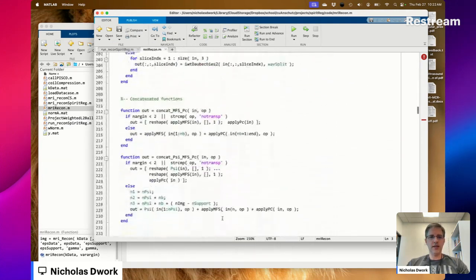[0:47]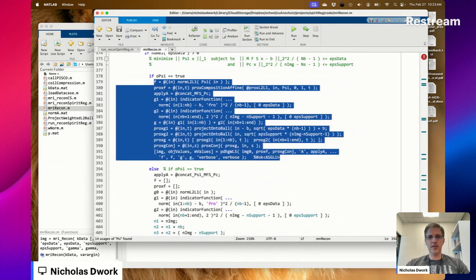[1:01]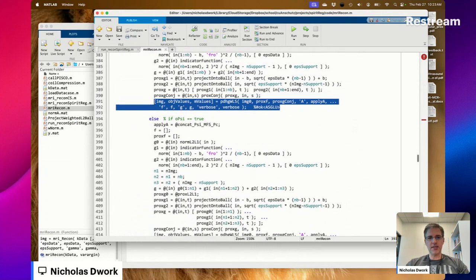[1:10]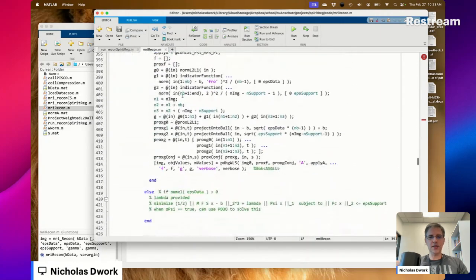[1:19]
So what did I do? I created MRI Recon. And what's the refactoring here? Well, I no longer set up the functions so that either PDHG or FISTA solves the problem. For each option of inputs for whatever problem I'm going to solve, right there, I set up the function and solve the problem, reconstruct the image. I think this is cleaner because it was becoming difficult to figure out whatever post-processing was needed after the optimization to reconstruct the image. I was basically having to set up this same set of conditions before and after.
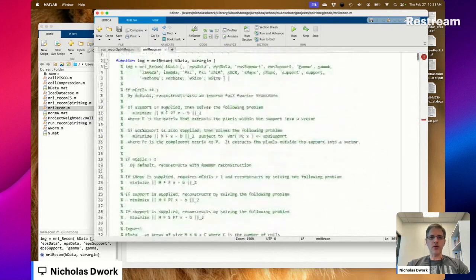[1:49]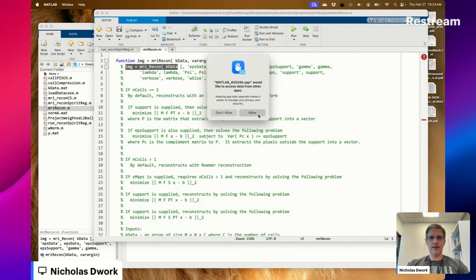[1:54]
You can see what these conditions are. If the number of coils is greater than 1, if the number of sensitivity maps is greater than 0, if the support is supplied, and if the EPS support is greater than 0, if EPS data is greater than 0. All right, so that's what's happening here. As I said, none of this is tested, and that's going to change now. So we're going to do just the simplest thing first. Let's see if it makes anything at all.
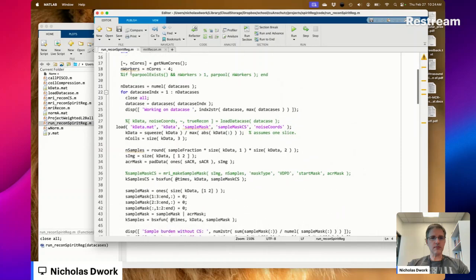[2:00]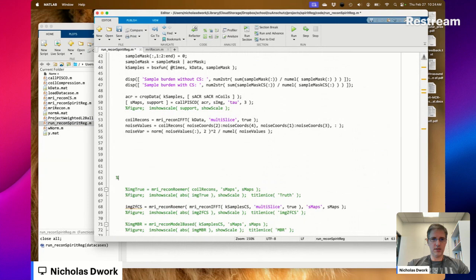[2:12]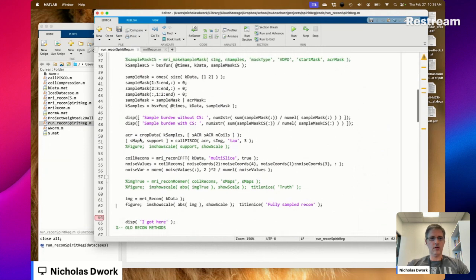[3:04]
Here's loading in the data, sample masks, making the samples, and here's where the image reconstruction starts. Old recon methods. I guess we could keep that one. Okay. So the simplest thing to do would be to just supply K data, or rather K samples. Figure, imshow, scale, absolute image. MRI Recon, because it is called MRI Recon.
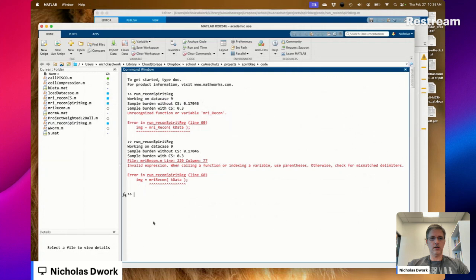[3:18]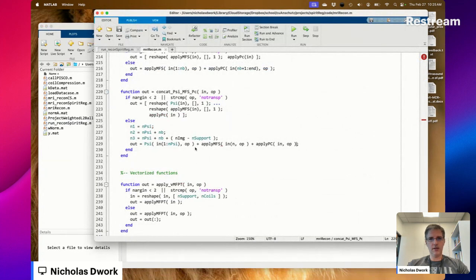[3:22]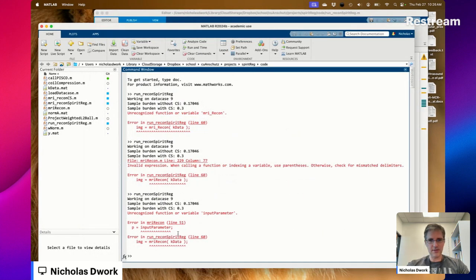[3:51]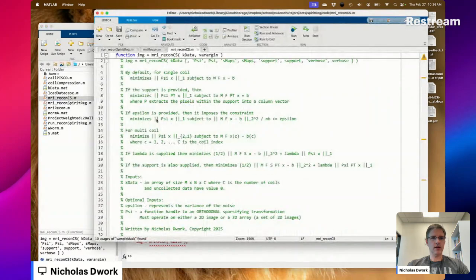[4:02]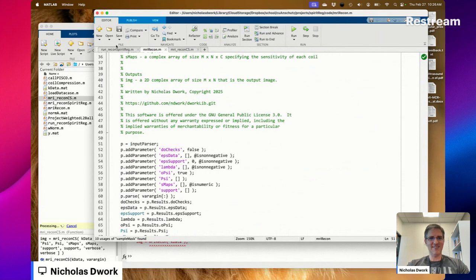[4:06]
And we've got a bug. Well, that is that. Oh, so what's happening here? This is all happening because there are checks in here, and do checks is set, and even if it weren't, all of these functions are going to get created. See, so just getting this to run is going to be a little bit difficult, it seems. Input parameter. Huh? Input parser. Forgot the name of the thing.
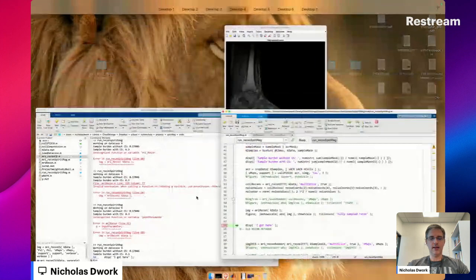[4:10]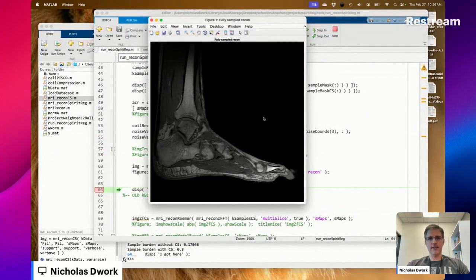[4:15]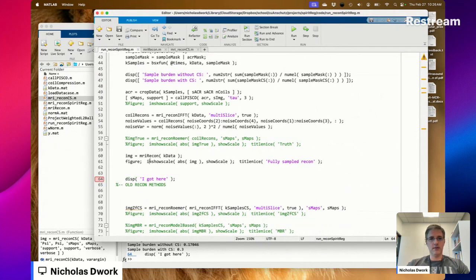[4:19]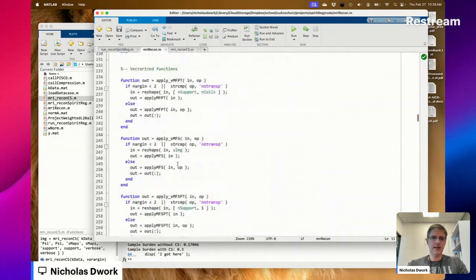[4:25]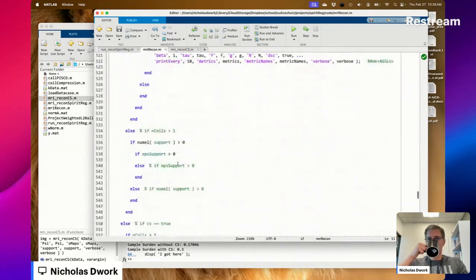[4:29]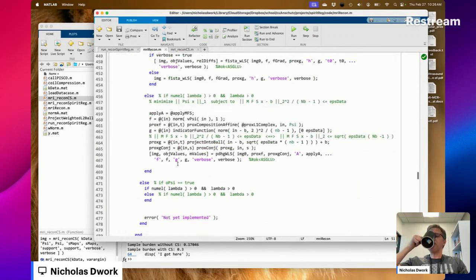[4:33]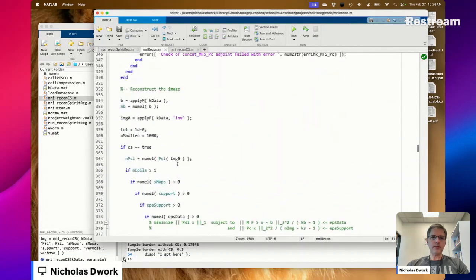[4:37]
Okay. That is the fully sampled reconstruction, and that is a good quality image. We got it to do something. We got this new refactor code, which has a ton of lines in it. Not a ton, maybe a pound or two of lines. We got it to run.
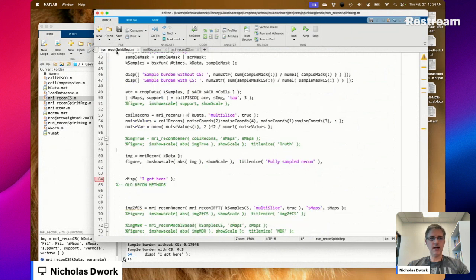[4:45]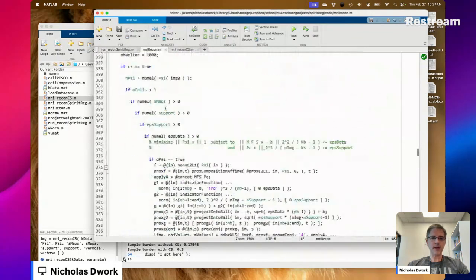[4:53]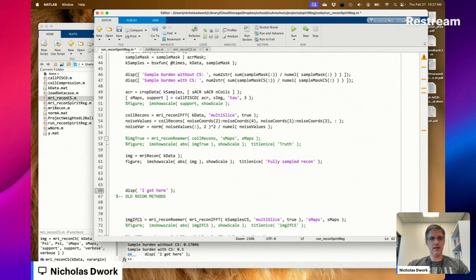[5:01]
Now look, lots of these options, I don't yet have implementations for these things. That's fine. We're just going to get something working. And we might not do all of these before the end of the project. Like I might just implement the ones I need to show that spirit regularization is useful. That's where I'm at. Okay.
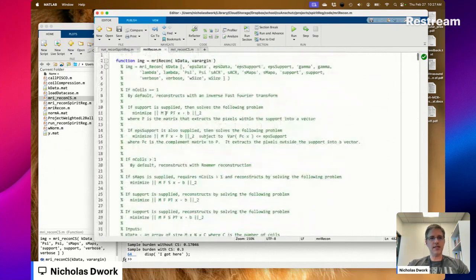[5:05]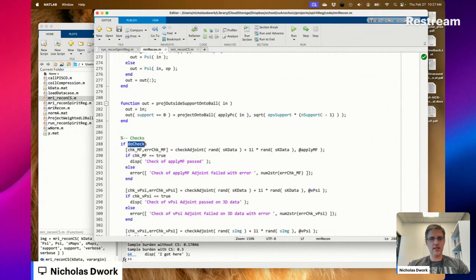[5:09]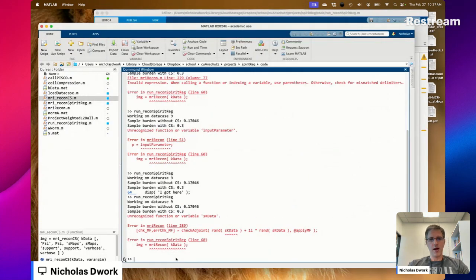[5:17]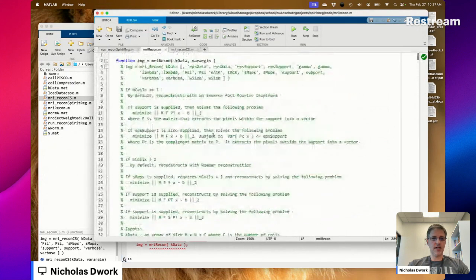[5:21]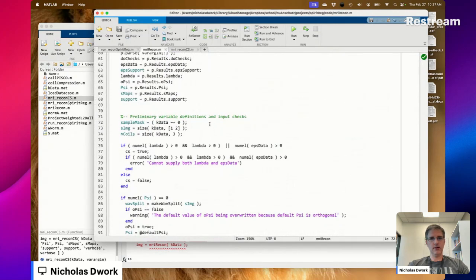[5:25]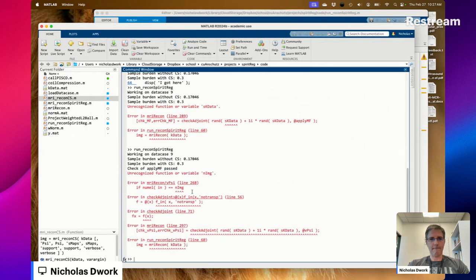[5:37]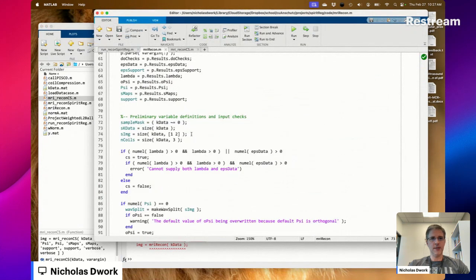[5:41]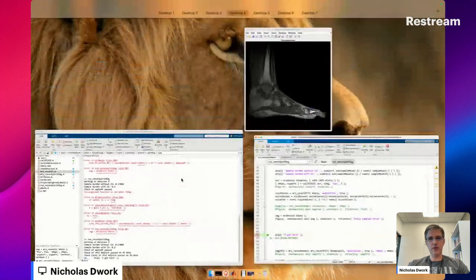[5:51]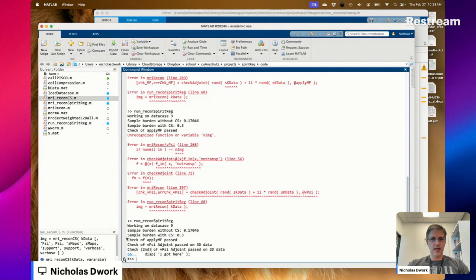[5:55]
Now the next question was, was do checks set? Because, so it was not set. Let's do checks. And let's see what breaks. Okay. Do I have an SK data? Looks like I don't. nImg. Looks like I also don't have an image. Wow, that was much easier than I expected. And whatever checks ran, they passed.
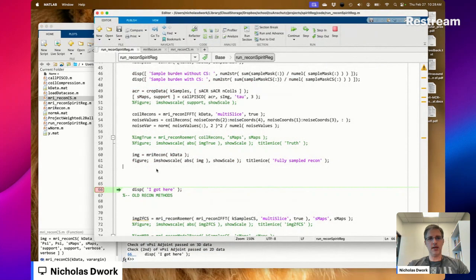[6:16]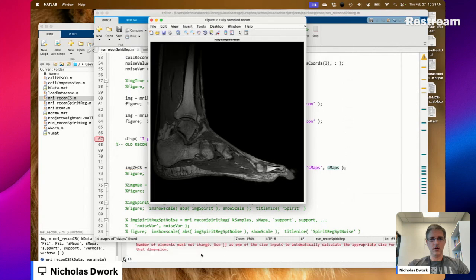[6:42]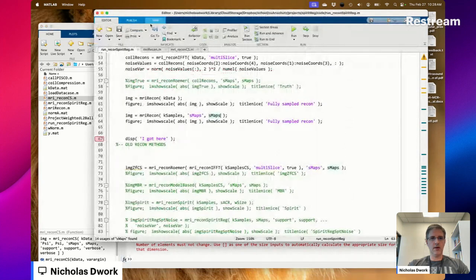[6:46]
Okay, now, some of these checks are not running because, for example, the sensitivity maps are not supplied. So I can't do the checks involving the sensitivity maps. Guess what we're going to do now? Well, you're going to check sensitivity maps. Okay. If I remember right, we've got two sets of sensitivity maps. Okay, so something broke. Oh, I see.
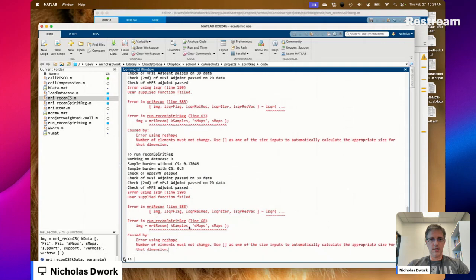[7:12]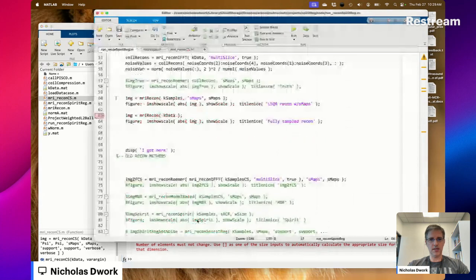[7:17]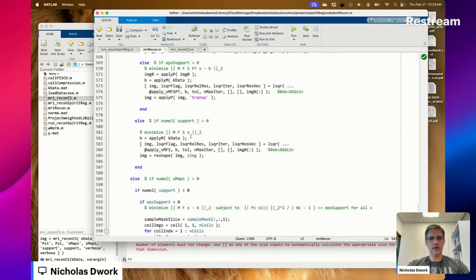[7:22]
This is still running. So before I was making things more complicated higher so that the more experimental one would run first. I wouldn't have to go through all the rest. I guess I'll keep doing that. All right, so there's a problem. LSQR failed. I don't want the LSQR. I want this. Where is LSQR called? Oh, here. Okay, why did it fail?
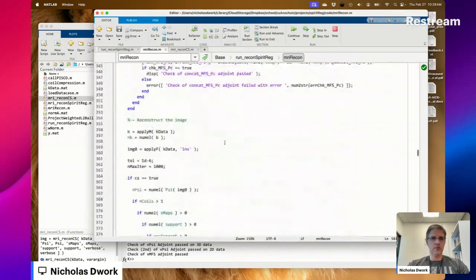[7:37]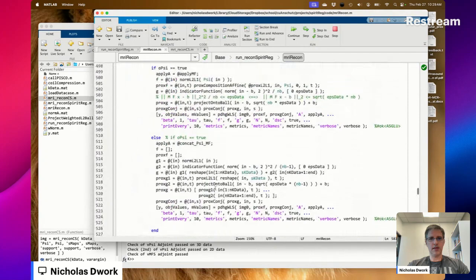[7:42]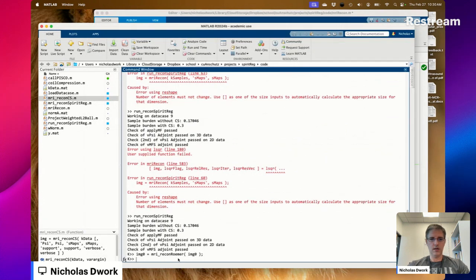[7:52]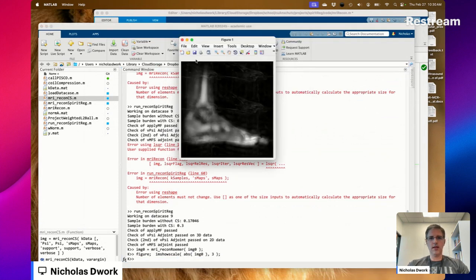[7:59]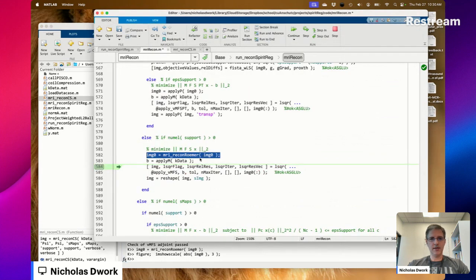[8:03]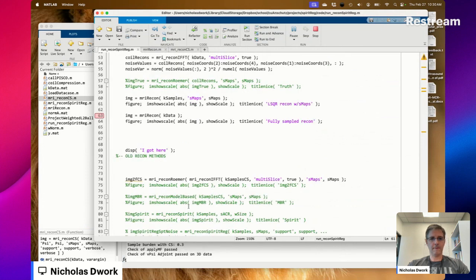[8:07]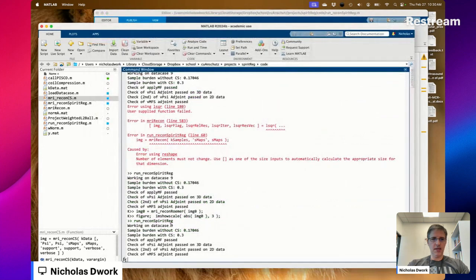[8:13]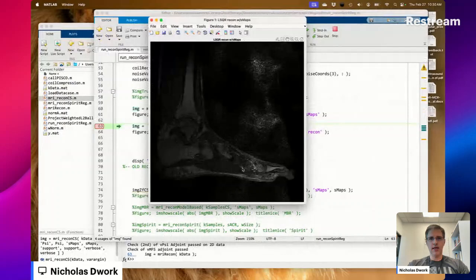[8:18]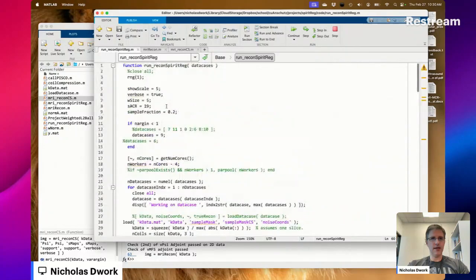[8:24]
Image naught is way, way, way too large. Where did image naught come from? Okay, image naught just does the apply F inverse. So image naught is equal to MRI recon Roemer image naught. Okay, that's about right. Got aliasing, fully sampled center region. That looks good. LSQR is running. The additional adjoint checks seem to have passed. And the result is terrible, which we expect because the undersampling is so bad, right?
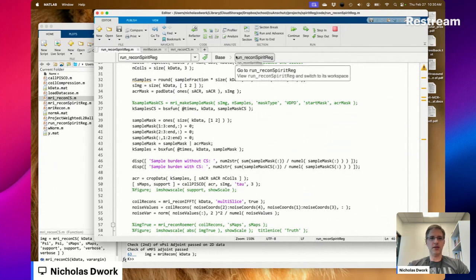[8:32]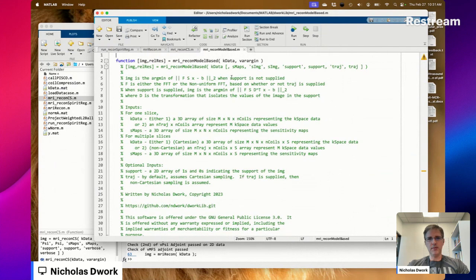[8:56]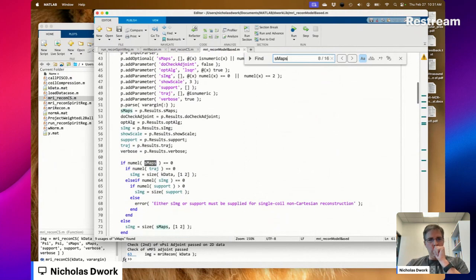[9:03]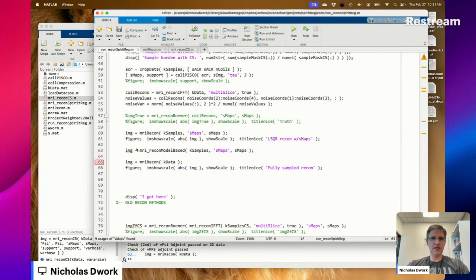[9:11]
What is the undersampling for sample mask? 1 to 3, yeah, every third. Now, I thought we had gotten good results with that before, so let's check. What happens in model-based recon if you don't supply the S maps? Does it estimate them? Oh, okay. If you supply multi-coil data, it assumes that you're estimating the S maps. Okay.
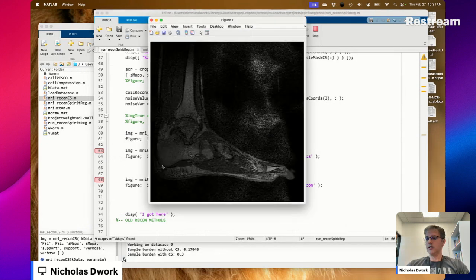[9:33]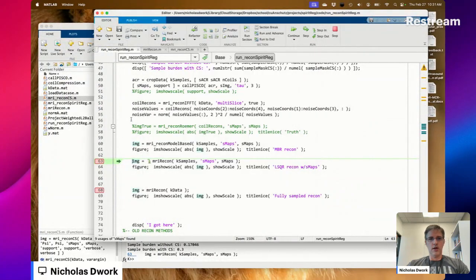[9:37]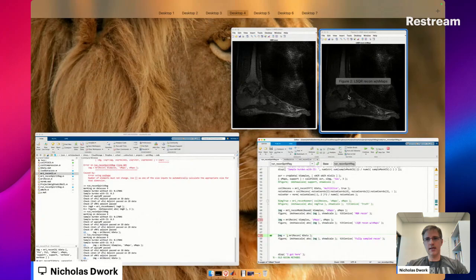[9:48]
So it turns out there's a long history of research involving the support in the reconstruction. Why aren't people using it? Like, I don't know anybody that uses the support clinically. They may use the fact,
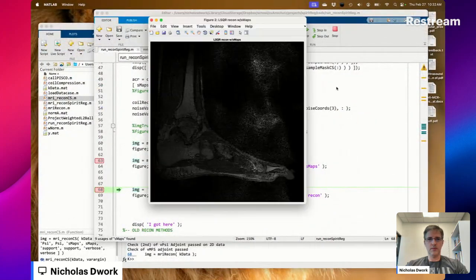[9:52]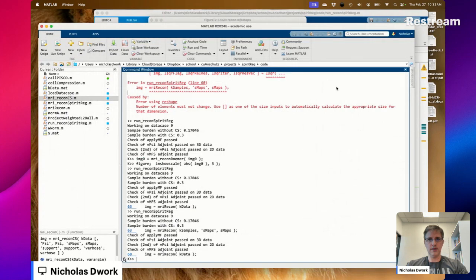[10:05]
Okay, so one's different than the other. That's a little strange. Is it just because one ran longer than the other?
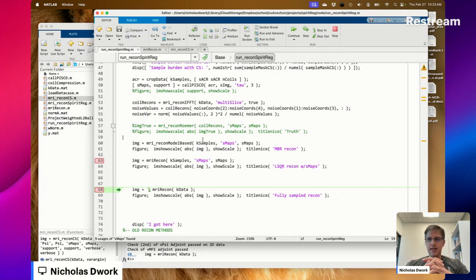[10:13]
They may use the fact that the image is a subset, the support is a subset of the field of view, but they do not use a known support, which is easy to get, and I don't understand why it isn't being used. Like that should just be used. There's no reason not to.
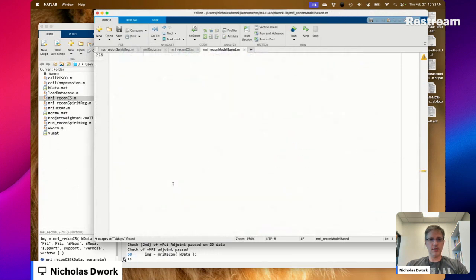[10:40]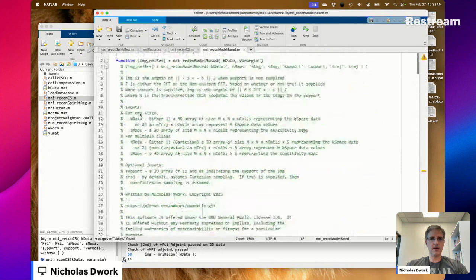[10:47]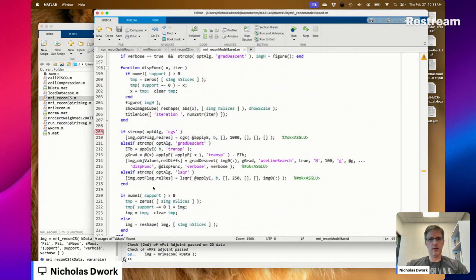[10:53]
Okay, so LSQR, how many iterations does this thing go for? Is it doing LSQR? Should be. It's going for 250 and MRI recon over here. And max iter, it's 1,000. So what happens if I change this to 1,000?
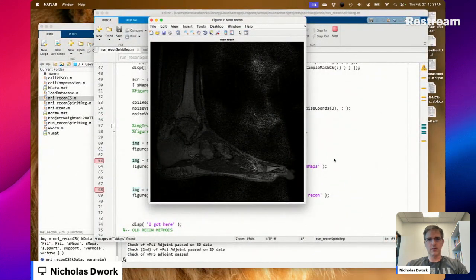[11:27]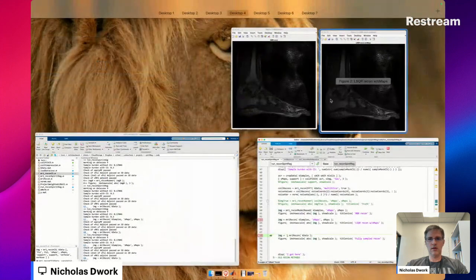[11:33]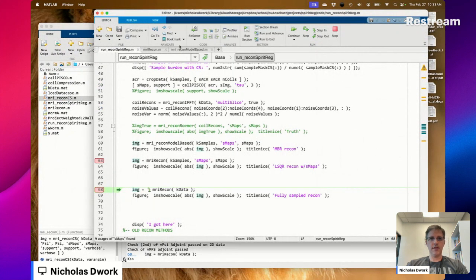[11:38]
Was that the difference? That looks darker. That was the difference. Okay, problem solved. Everything's okay. We'll send that back to 250 and we'll delete that. And it looks like MRI recon with sensitivity maps is working. What to do next?
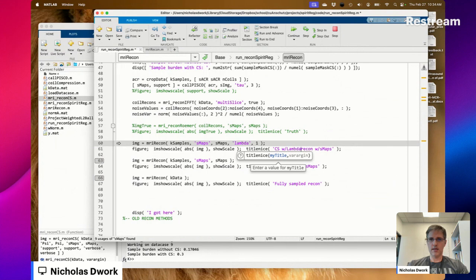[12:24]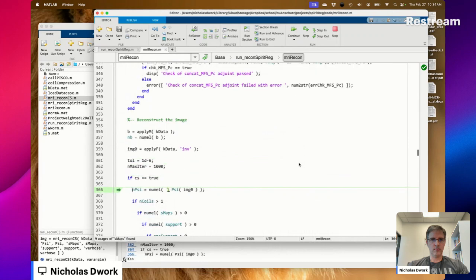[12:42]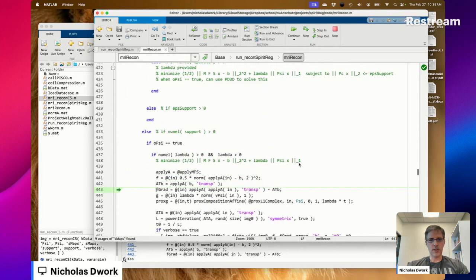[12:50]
Compressed sensing. When is compressed sensing true? Okay, so I don't know if I've implemented lambda. Let's find out. Looks like I did.
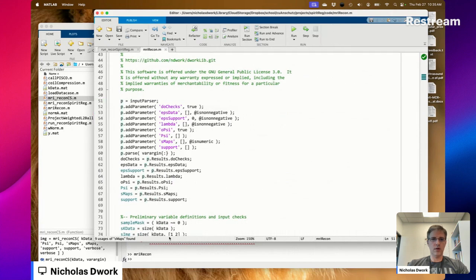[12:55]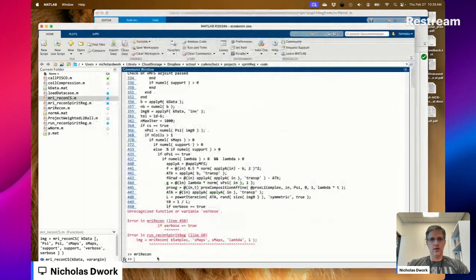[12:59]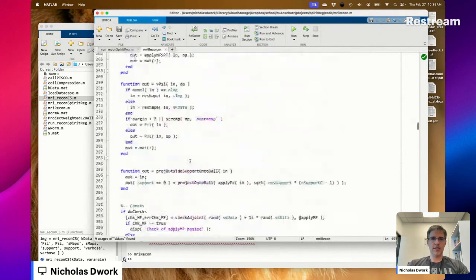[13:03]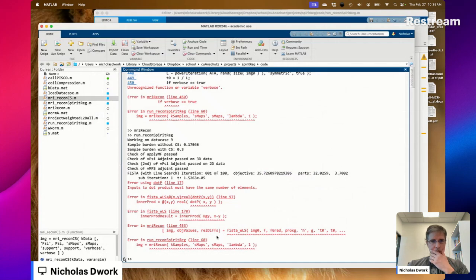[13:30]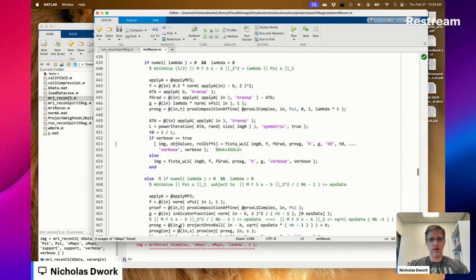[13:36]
Whoa! Crashed. Verbose is not a recognized function or variable. Let's change that, shall we? Do I want verbose to be true or false? I guess I want it to be true. Still broken. Inputs to dot P must have the same number of elements. I think I know the issue. Guess the size of image.
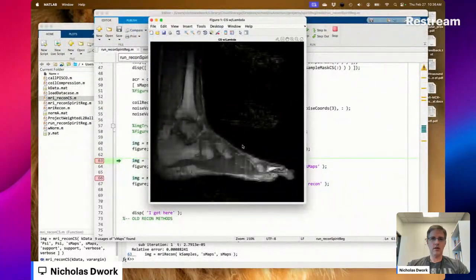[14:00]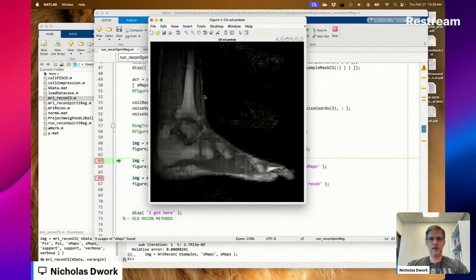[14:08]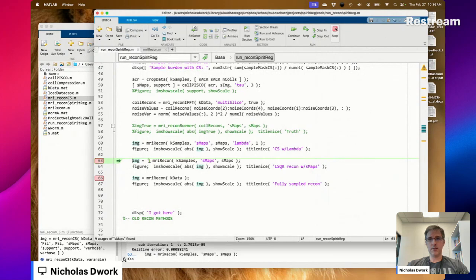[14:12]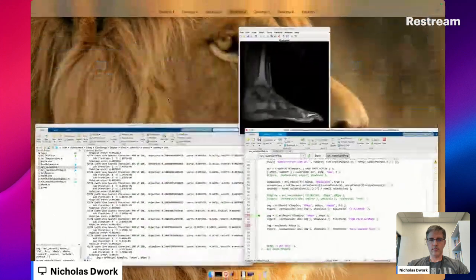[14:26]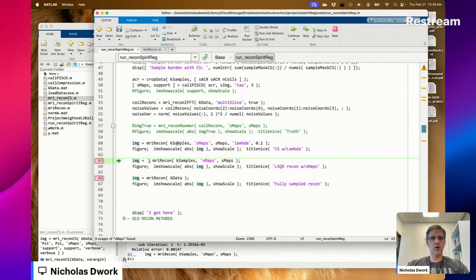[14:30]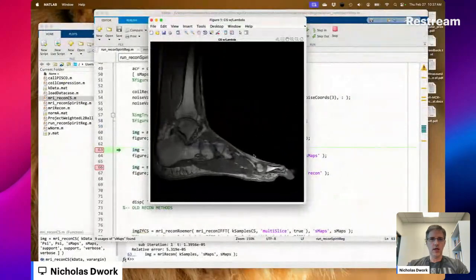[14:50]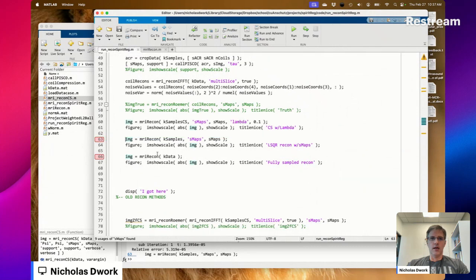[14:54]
Okay. That looks terrible. Looks like it's doing something. That looks much better. Oh, you know why it looks terrible? Because I didn't use the compressed sensing samples. That looks great. I'm quite surprised how well these codes are working.
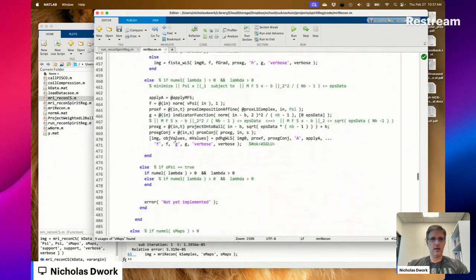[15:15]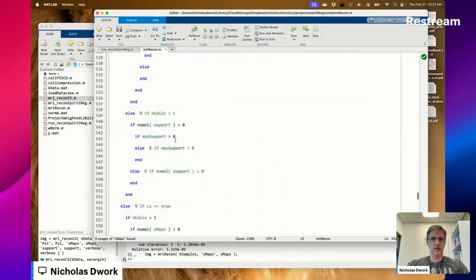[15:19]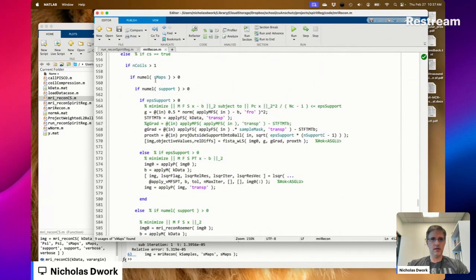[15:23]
Now, what comes next? Now, I guess supply EPS data. We're not going to do it with the support. Whoa. Wait, this is supposed to be CS equals true. Number of coils greater than 1. Number of sensitivity maps is greater than 0. Support. So this seems wrong, doesn't it?
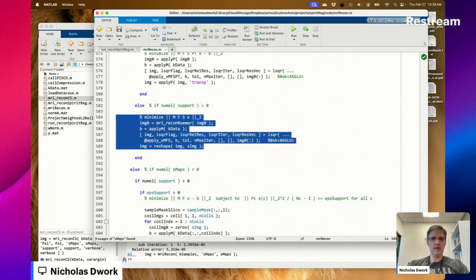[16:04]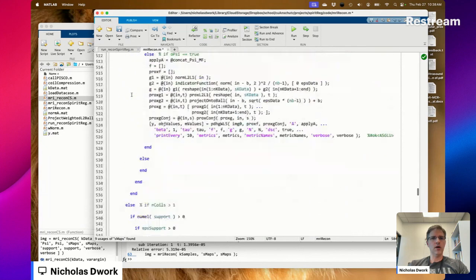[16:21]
This should be, surely that's not what. Oh. But this is always CS. Oh. Okay, never mind. This else is the else for the if CS equals true. So if CS equals true, then we're in here in coils S maps, numerical support is not greater than 0, so we go into this else.
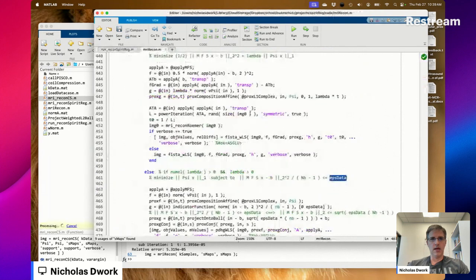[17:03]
OSI is going to be true because we're using the Daubechies 4 wavelet transform. And here we are with if numel lambda is greater than 0. Okay, so this is where we should be. And if not, then we use EPS data. Okay, this is what I wanted. And EPS data is an estimate of the variance of the noise or the error. So we're going to pass in noise var.
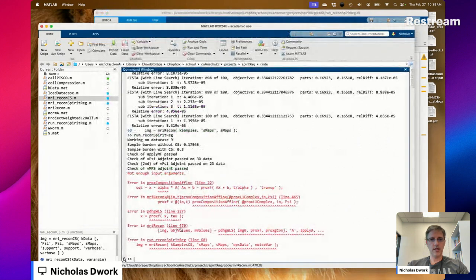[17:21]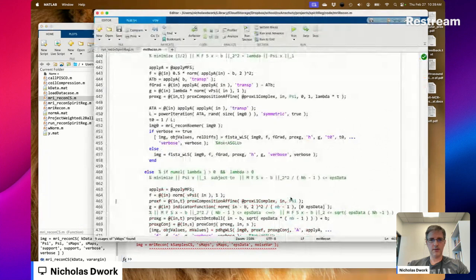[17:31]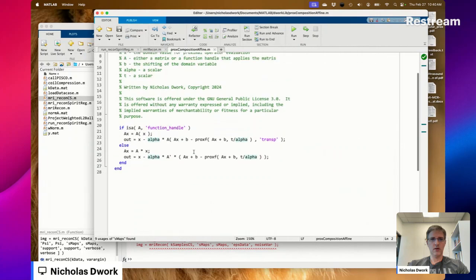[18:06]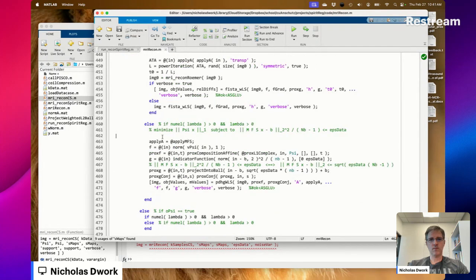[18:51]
That crashed. Not enough input arguments. Line 465. Huh. Okay. X psi b alpha t. What is alpha? Okay. B alpha is the one right before t. This is an orthogonal transformation. oPsi equals true. So alpha is 1. All right. Nope.
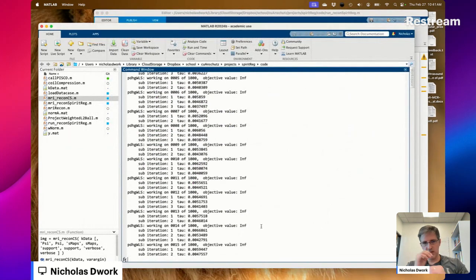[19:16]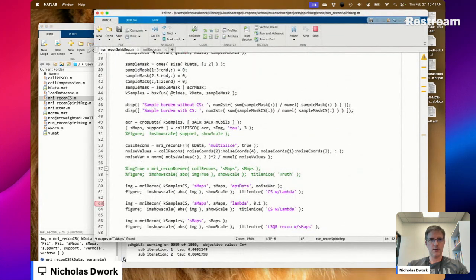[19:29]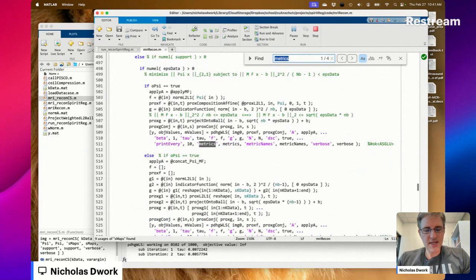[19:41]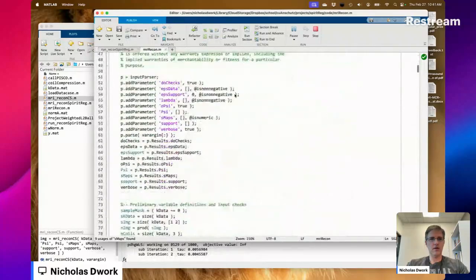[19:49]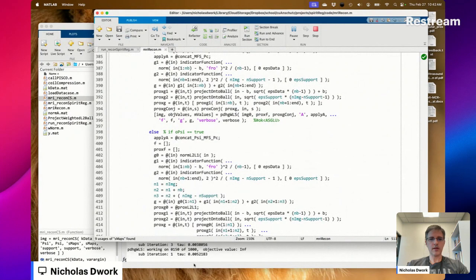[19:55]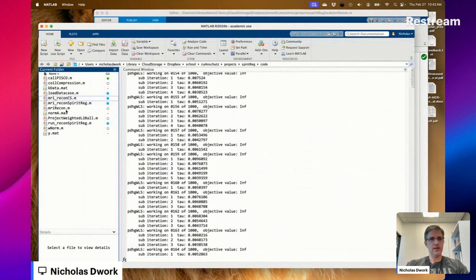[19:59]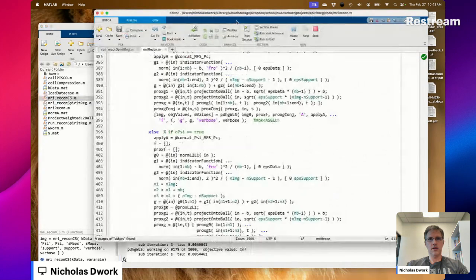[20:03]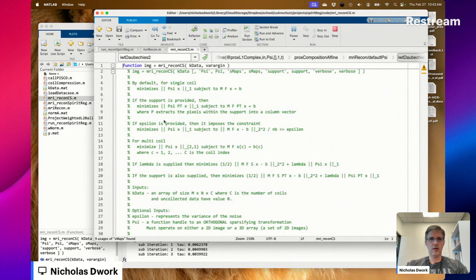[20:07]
Okay. This is running. And I've lost the metrics and such. Such is life. Okay, there's metrics around here somewhere. Nope. It's not even defined, so what happens if you pass in a variable that doesn't exist? Huh. Strange. I think I'd like the metrics.
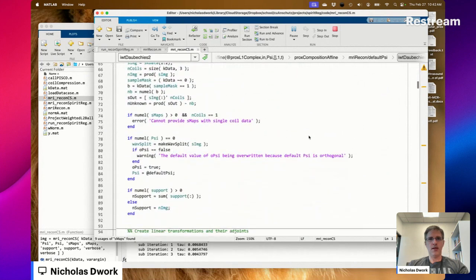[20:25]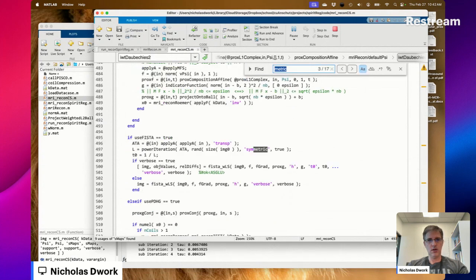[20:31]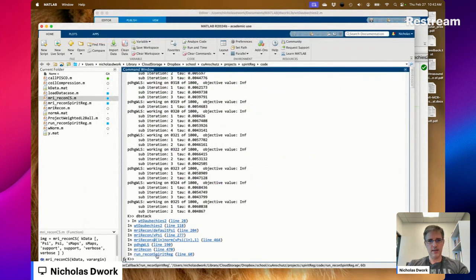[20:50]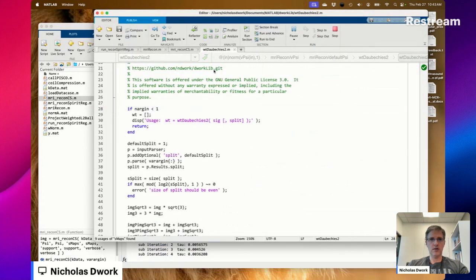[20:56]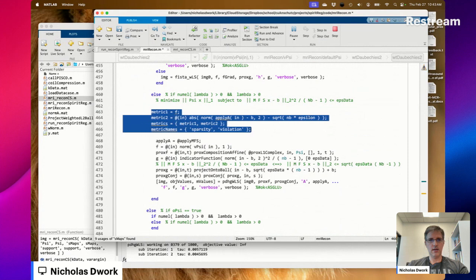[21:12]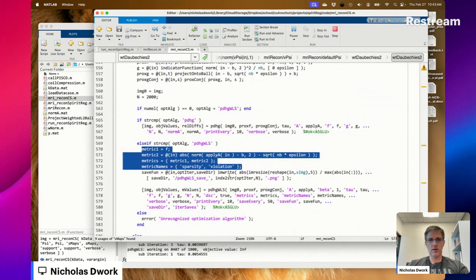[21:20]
All right, we're 20 minutes in. Let's see. Where is this DB stack? 470. You know, I can make the wavelet transform faster. It's one of those things, as soon as I do it, I'm going to say, why didn't I do that before? Metrics, metric names, okay. All right.
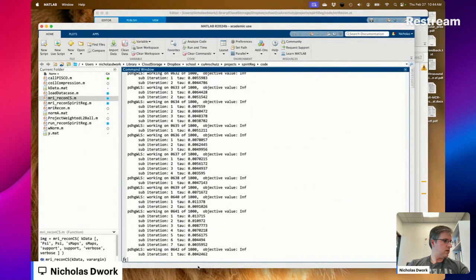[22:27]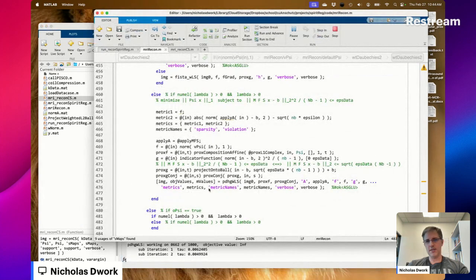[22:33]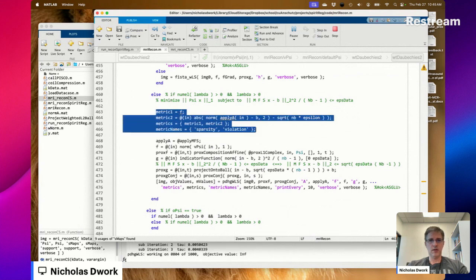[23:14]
This is going for 1,000 iterations. This is astoundingly slow. But we know that unless you go for 1,000 iterations, you don't get a decent result out. So there you have it. Should probably create these metrics after these things are made, huh? We need a, there we go. If a lot of the time is being spent in the wavelet transform, maybe it's time to fix the wavelet transform.
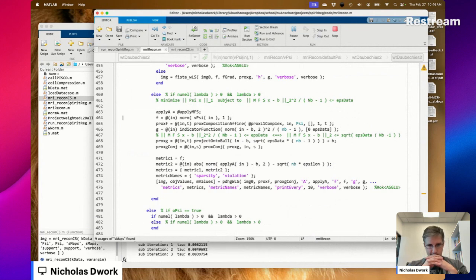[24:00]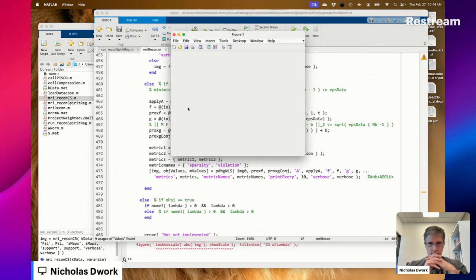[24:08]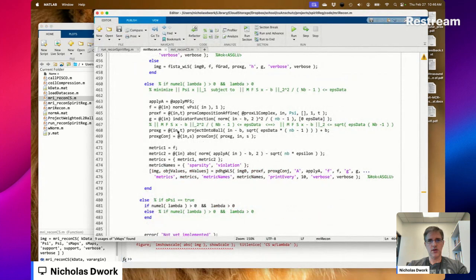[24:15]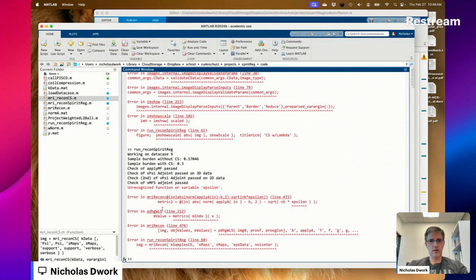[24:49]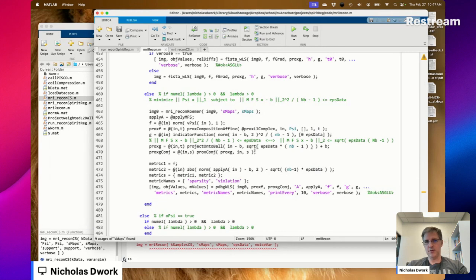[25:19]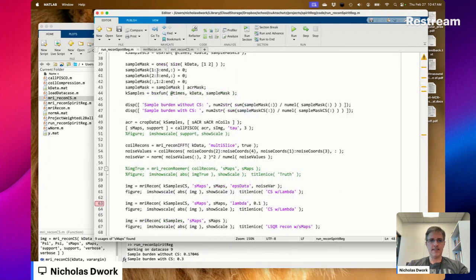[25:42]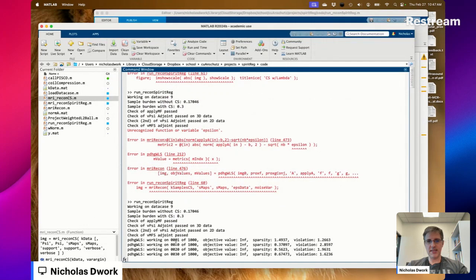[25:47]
You're joking. You know what I forgot? Image none. Let's try again. See that we're doing this radius. So this is not going to be a major change, okay? But a major efficiency. We're doing this radius calculation several times. We could store it. We're also doing it down here. Okay. Now we have to wait for 1,000 iterations again, but oh, we're printing every 10, so that's nice. And we got these metrics, and that's just kind of nice to see, isn't it?
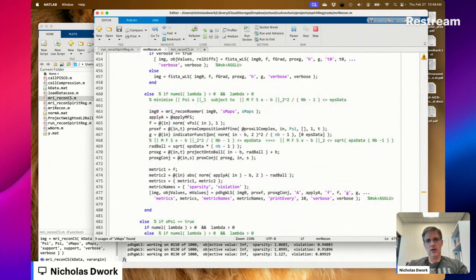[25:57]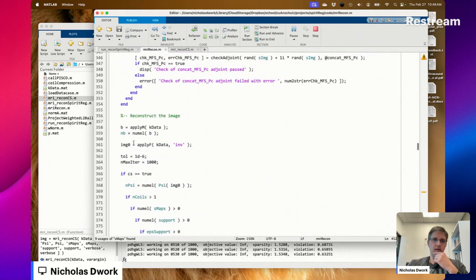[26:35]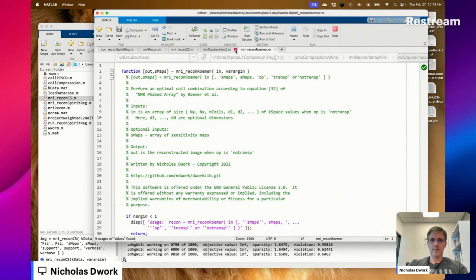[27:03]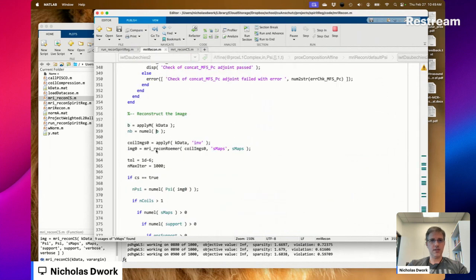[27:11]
Okay. Where else was there a recon roamer? Do we have sensitivity maps here? Yes. So that at least prevents us from having to calculate sensitivity maps within recon roamer. It's a fast calculation relatively, but no reason to do it if we don't have to. I should really call this coil recon 0. Then image 0 is going to be MRI recon roamer coil images 0 S maps. And then hopefully recon roamer is smart enough that if you supply S maps but it's empty, yep, then it calculates something. So that should just work.
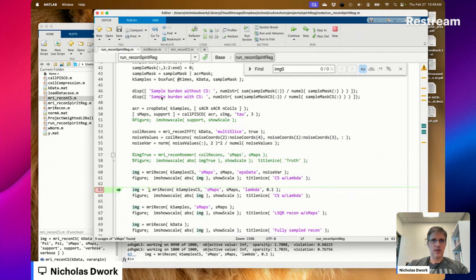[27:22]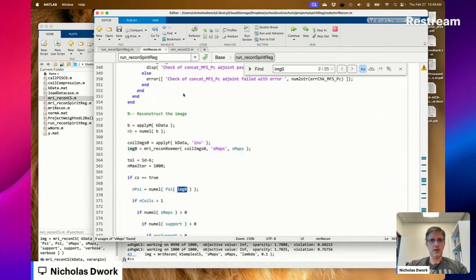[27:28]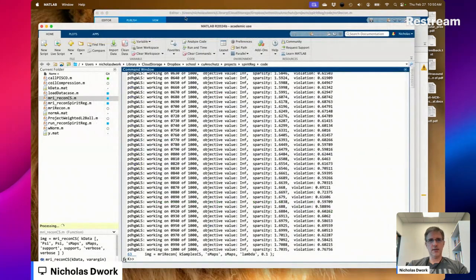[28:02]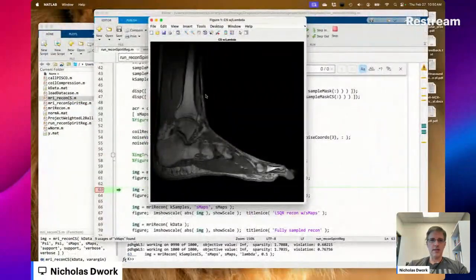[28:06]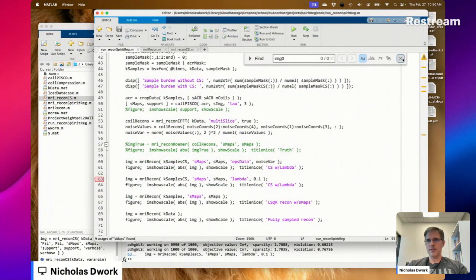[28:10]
So now let's go back to image 0. Oh. I just broke the code. And I can fix that. Oh, okay. Here, like this. If n coils is greater than 0, and n coils is greater than 1, and so this will be this. And now everything's okay. Oh, wait, is it? I don't think it is actually. I think that's a bug. Let's see what this did. That's a high quality image, folks. So we've got good stuff happening.
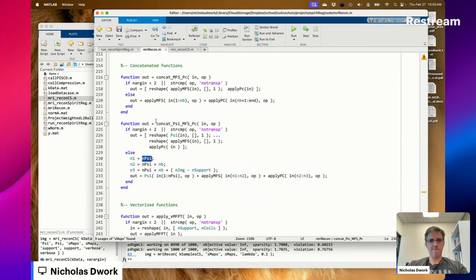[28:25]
Okay, the issue is psi and psi. I think you need to apply it to different things in different places. See, here it would be applied to image 0. Okay, so then N psi should just be, I guess we'll have N psi coils equals numl psi coil images 0. Okay.
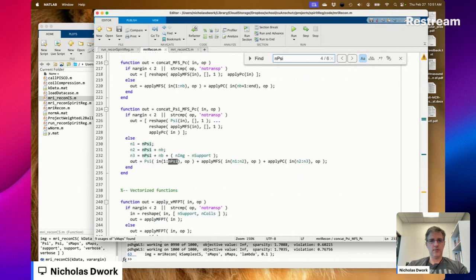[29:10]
This code works. What I'm going to do now is just go through an example, like we're just going to add a new one of these. I guess we'll add this one. Oh, no, this one looks complicated. We might have to use PD3O, which means we have to implement PD3O. We don't have to, but we might use PD3O for this. The reason is that this is differentiable.
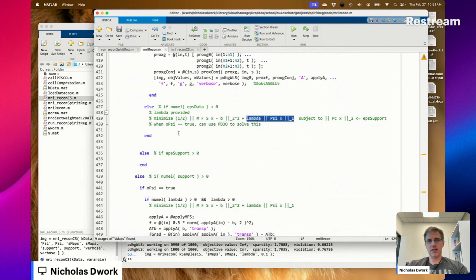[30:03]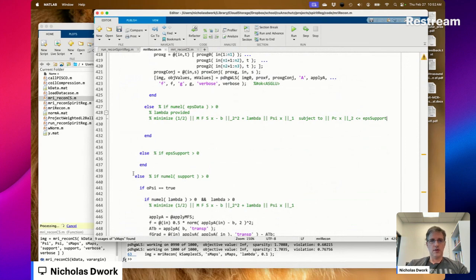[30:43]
This has a simple proximal operator when oPsi is true. And that also has a simple proximal operator. So never mind, we're going to do this now. So F equals apply MFS. Oh, no. Can we use, if oPsi is true, oPsi happens in here. Okay. If oPsi equals true, else end.
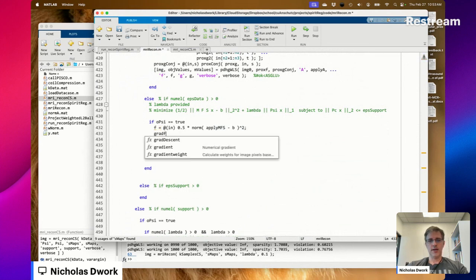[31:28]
So F is going to equal 0.5. I think we can use FISTA for this. Times norm, apply MFS, minus B, squared. grad F is equal to apply MFS, minus ST FT MT B.
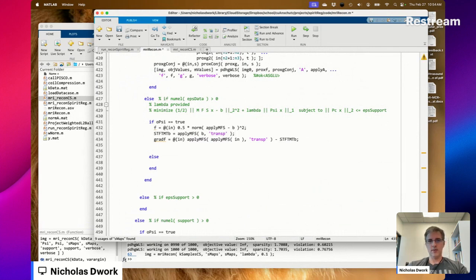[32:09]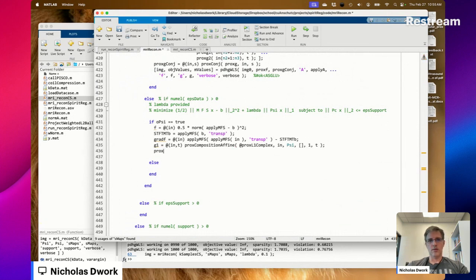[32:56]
Okay, now G. Still okay. G1 is equal to prox composition affine, prox L1 complex in, psi T. Prox G1 is equal to lambda times T, okay.
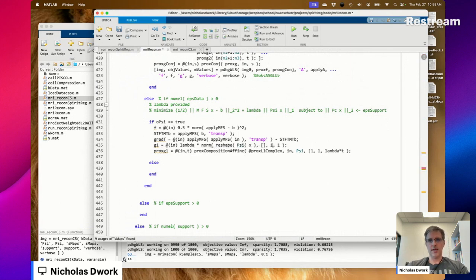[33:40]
Well now, but that's the prox G1. G1 is equal to in, lambda times norm psi x. I'll turn this into a column vector. Okay. And here's the proximal operator. G2 is equal to, this isn't right. So this should be squared and C minus 1.
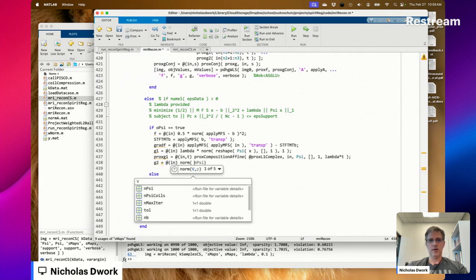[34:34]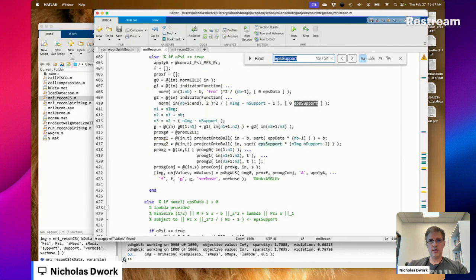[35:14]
C in 2 Frobenius divided by NC minus 1, indicator function, zero EPS support. Is this anywhere else? Yes. This is, okay, this is NC.
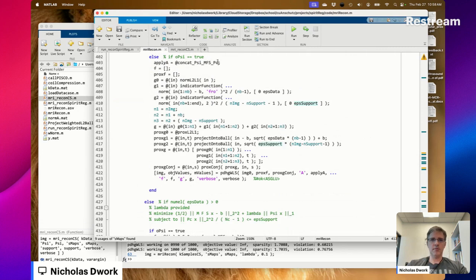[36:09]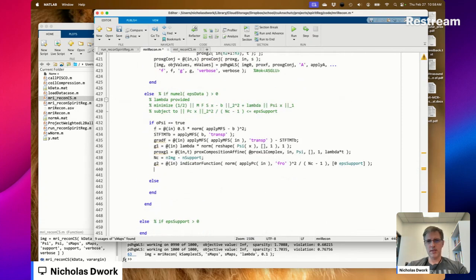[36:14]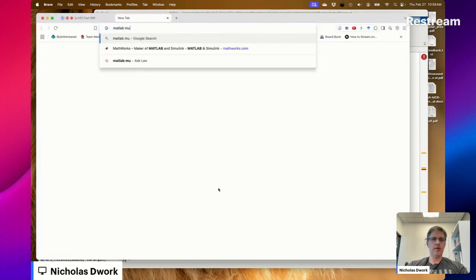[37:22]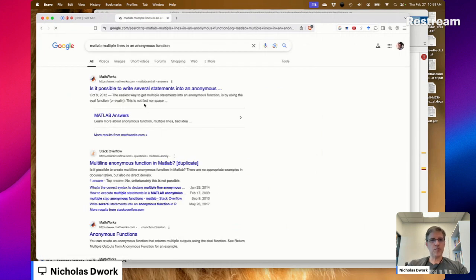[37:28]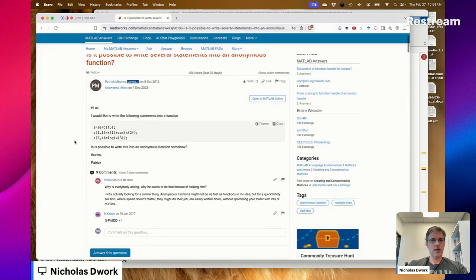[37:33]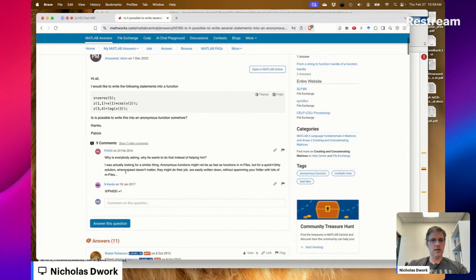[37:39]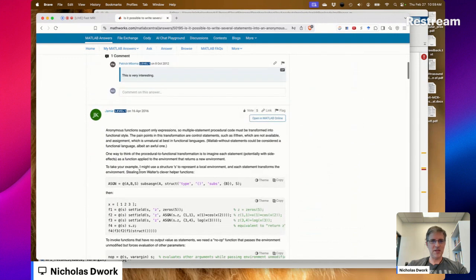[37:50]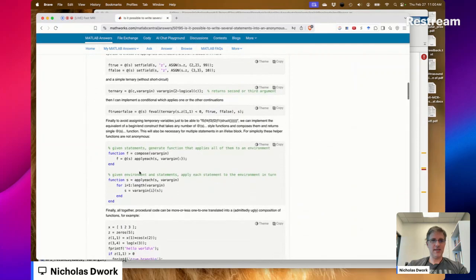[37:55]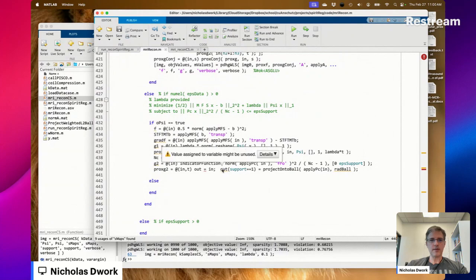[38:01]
So in this function, I put PC here, but I shouldn't need to. And support equals 1 is equal to, oh, what I need to do is like this. Out equals in, and then out. And you cannot have multiple lines in an anonymous function in MATLAB. Wow, okay, there's like a meta programming in MATLAB. Won't be doing that. We'll definitely not be doing that. Okay. I think I faced this already. We're at line 440, okay? Project outside. Look at that.
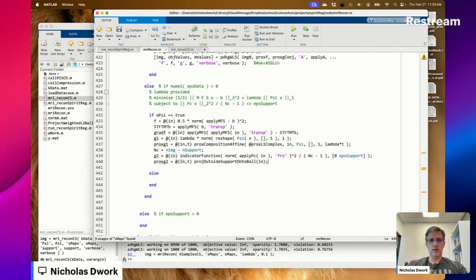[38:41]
Okay. Now we use FISTA. Okay, so this was called fgrad. Oh, no, forgot about proxg, didn't I? Okay. No idea what T naught should be. Proxg is equal to at in t. Well, proxg1 in from 1 to NB, proxg2 from end NB plus 1 to end. What does proxg1 return?
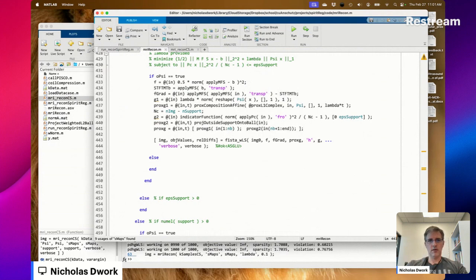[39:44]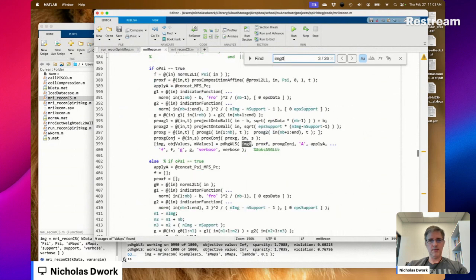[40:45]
I guess it returns something of the same size. I think I need to make it a column vector. So did I end up fixing that thing with it? Yep, I did. Okay. Where on earth was I? I think it was right here. I think that works. And so one day we'll test it, but not today.
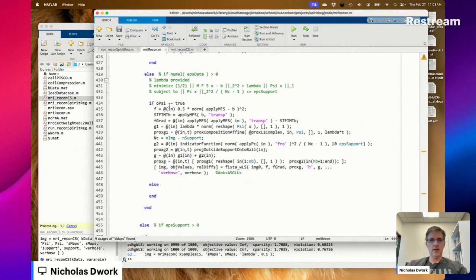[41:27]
So that now you see, this is the sort of routine that happens for every combination of inputs that are supplied to this code. We have some of these errors not yet implemented. I guess I could put one right there. Just trying to make sure. This has a simple proximal operator, and this has a simple proximal operator.
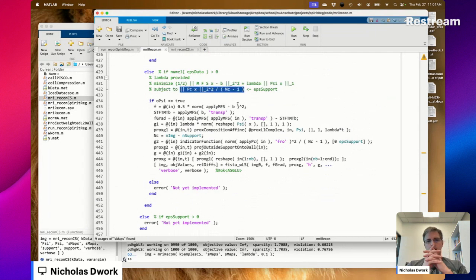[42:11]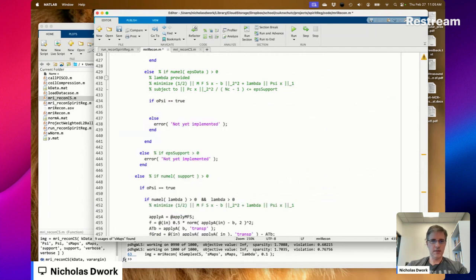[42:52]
So G is equal, oh, shoot. No, I cannot do this. Yep, can't do it. So what? You have something that is differentiable, something with one simple proximal operator, and a second thing with a simple proximal operator. Okay, so that was a waste of time. Could use PD3O here.
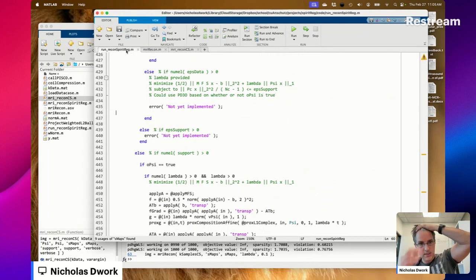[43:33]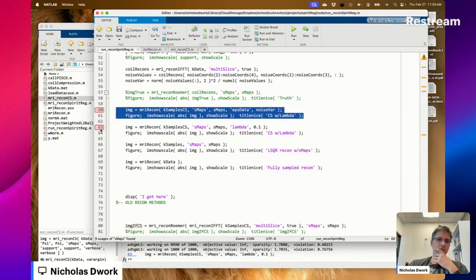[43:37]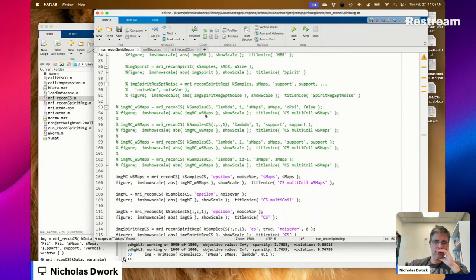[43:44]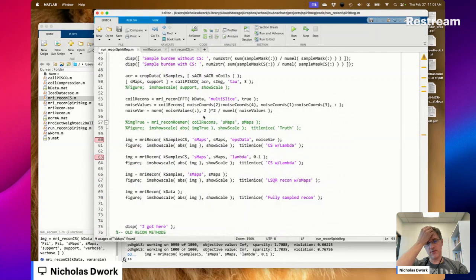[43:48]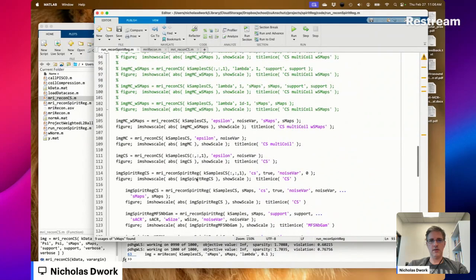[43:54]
Yeah. Thank you, MATLAB. Guess I'll just put that there. Could use PD3O based on whether or not oPsi is true. All right, so that was a waste of time. That's all we're going to do with that today. What else have we got? Oh, what happens if oPsi is false? I'm not going to check it because that's not what we're working on.
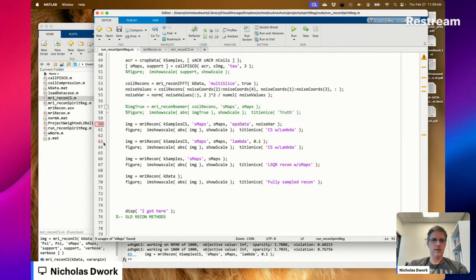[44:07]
Now what? Just put this one down here, I guess. I can always move it back up if I want to see the true image. Yes, okay. Never mind. I think what I'm going to do now is Spirit Reg.
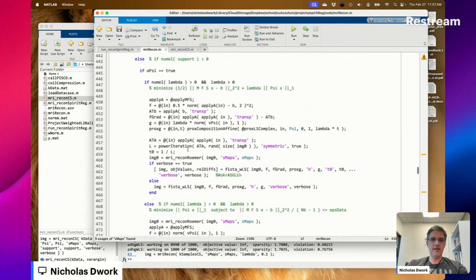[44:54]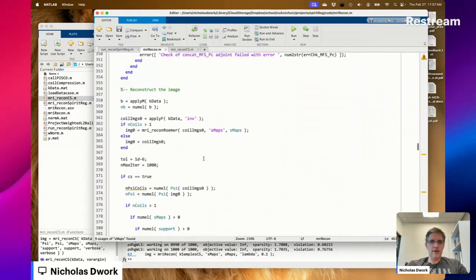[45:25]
Here's where the code did not work out as nicely as I wanted. Rather than creating a different implementation for each combination of inputs, I wanted to be able to create G Spirit Reg, G compressed sensing, whatever, G lambda, and then use FISTA or PD3O to solve them, concatenating the proximal operators into a single proximal operator and then run. But instead, now it seems like what I have to do is
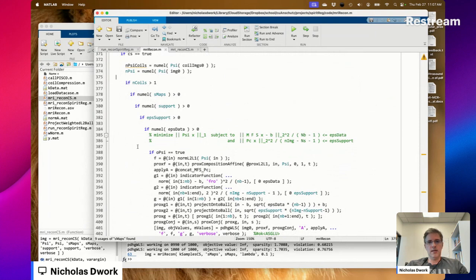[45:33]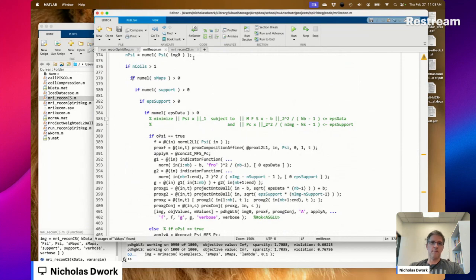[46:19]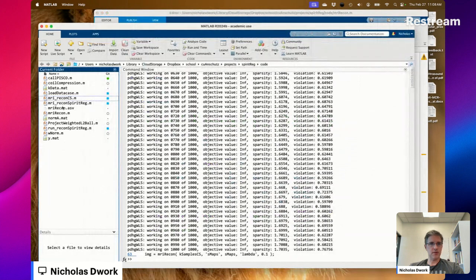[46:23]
now one way to simplify this code is maybe if n coils equals 1, I just always use a sensitivity map of all ones, which adds computation, but not much relatively. And then I could call the same code over and over again. This is pretty tough. All right. If n coils equals 1, sensitivity maps. Yeah, because I've also got this going as sensitivity maps. If you don't supply sensitivity maps, you could do joint sparsity is my idea. We'll see if I ever use that.
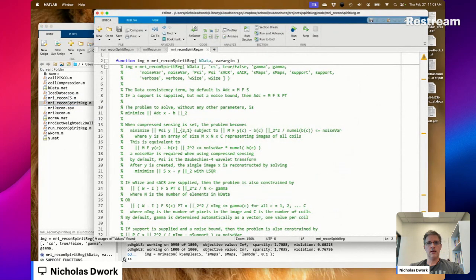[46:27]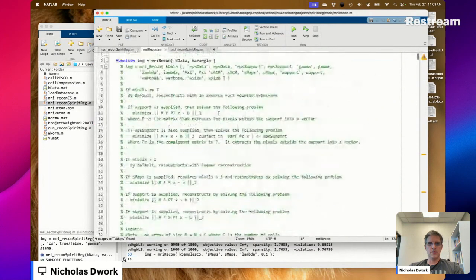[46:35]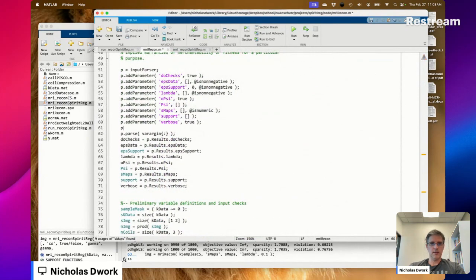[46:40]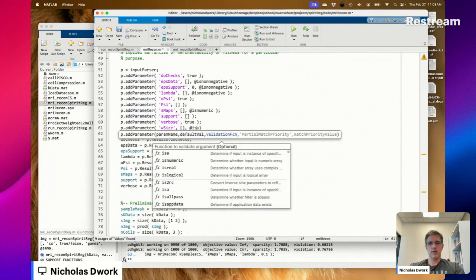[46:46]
Okay, we're going to add spirit regularization. We already have W size here. We don't have it here. Positive.
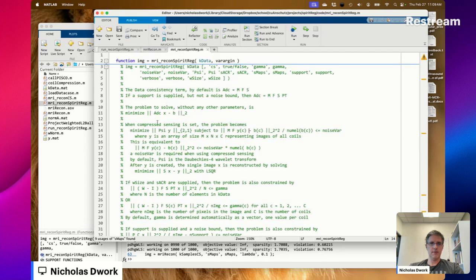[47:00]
I have to leave. I have a meeting at noon. All right.
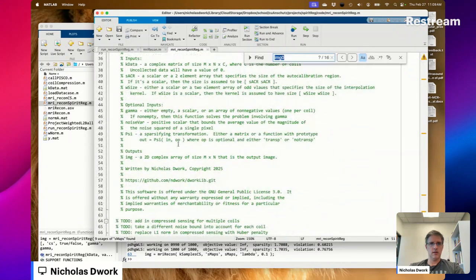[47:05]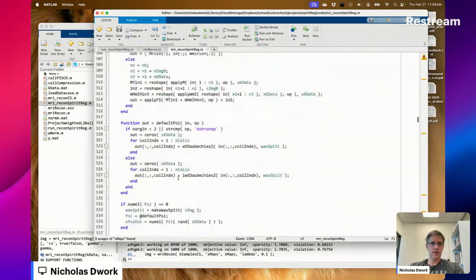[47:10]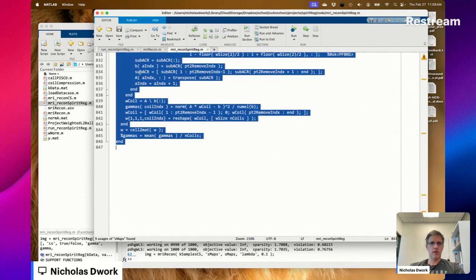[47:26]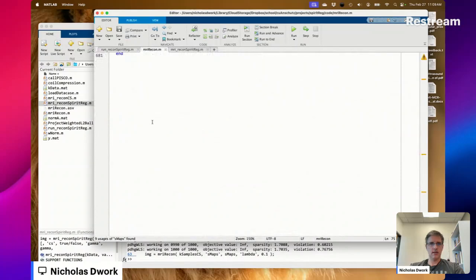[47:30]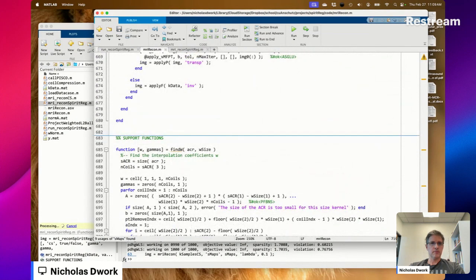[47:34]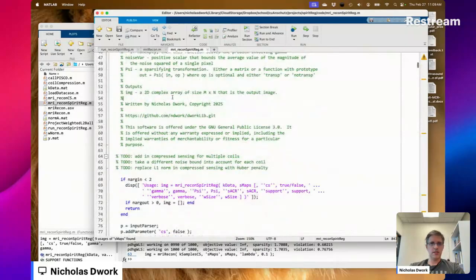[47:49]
There's this function. I remember a support function, and we're just going to steal that. Let's add that down here. It's very warm in my office. Let's see where W size gets used.
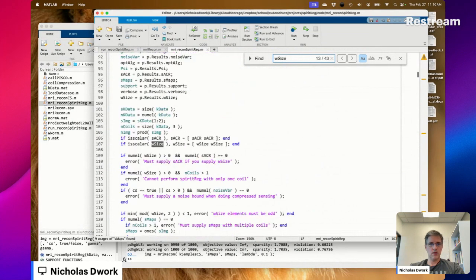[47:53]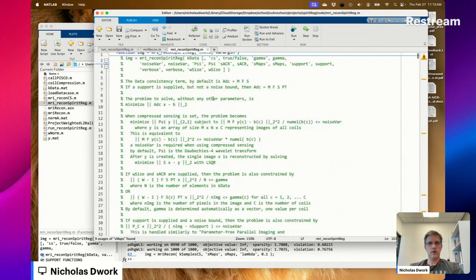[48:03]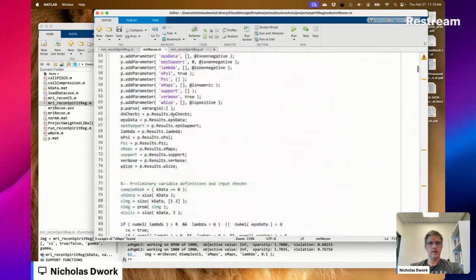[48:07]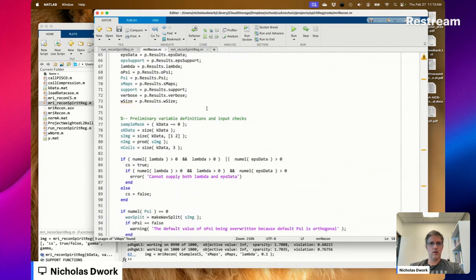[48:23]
Oh. We're also going to need SACR. Okay. Cannot perform spirit regularization with only one coil. Okay. You must supply SACR if you supply W size.
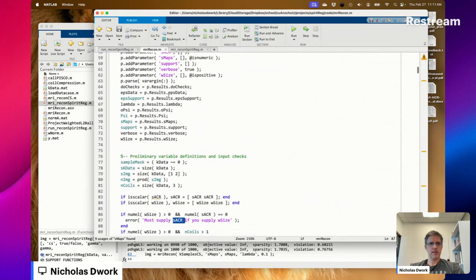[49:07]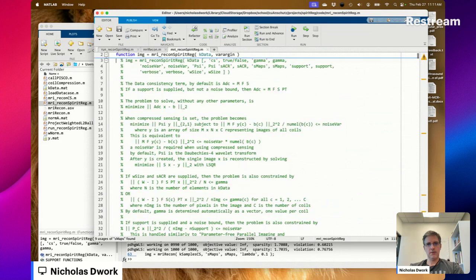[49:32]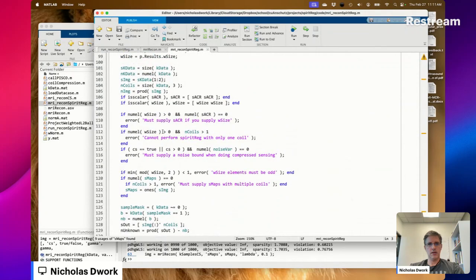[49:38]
Did I not do this? If you supply W size and the number of coils, this should be equals 1, right? How did this ever work? Because when you supply W size, then you're doing spirit regularization. Okay.
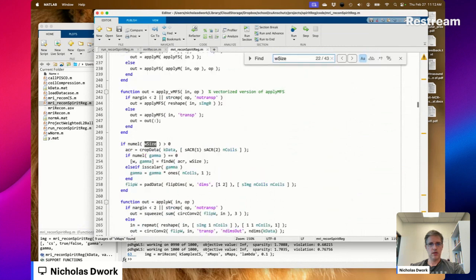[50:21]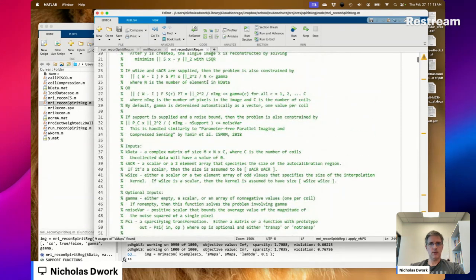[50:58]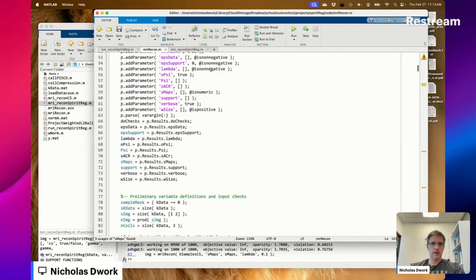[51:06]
Now what? Going back to where W size is used. times W. What is this doing? I think it's like preparing. Gamma. What was gamma? We're going to call gamma EPS Spirit Reg, EPS Spirit.
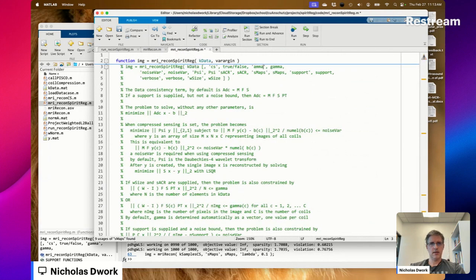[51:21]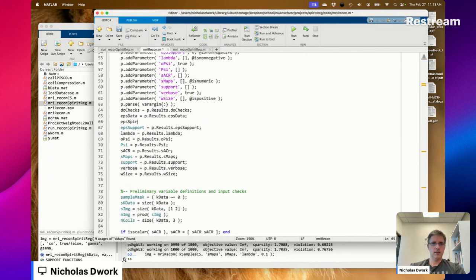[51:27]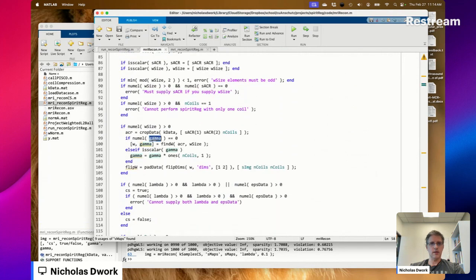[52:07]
Wait, surely gamma's not passed in. You can pass it in, okay? I'm trusting my past self. I don't remember this stuff well enough. I will eventually, and then we can decide for ourselves whether or not to keep EPS gamma as an input. EPS gamma? No. EPS Spirit. So let's call that EPS Spirit Reg. All right.
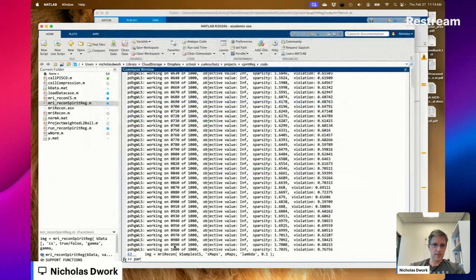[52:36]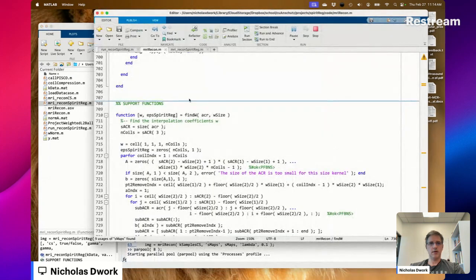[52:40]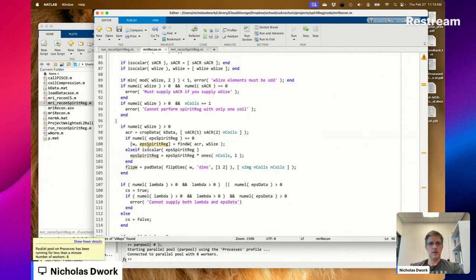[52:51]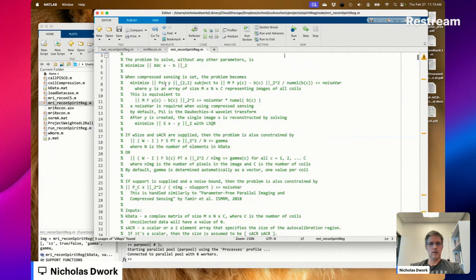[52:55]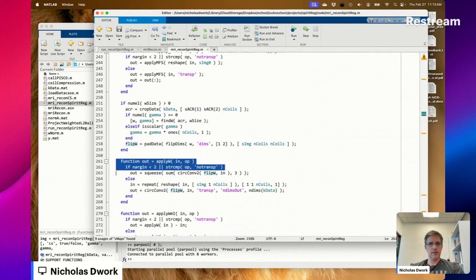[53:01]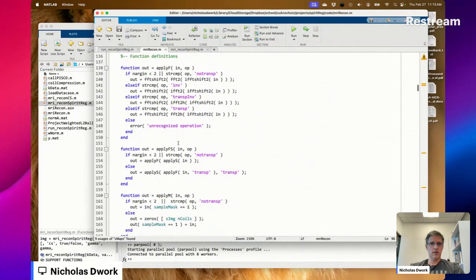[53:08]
This does parallel processing, so let's get ready to do that. We're going to set up a par pool. Okay. Where does flip W get used? You make a function apply W. Okay. Apply F, apply W. Oh, nope. Apply FS, LMN, PS. Ooh. Oh, because it's default size. So what's it doing there? Oh, because all of these are apply. Okay, that makes sense. Okay, so now we've got apply W.
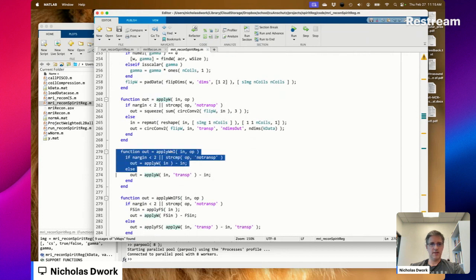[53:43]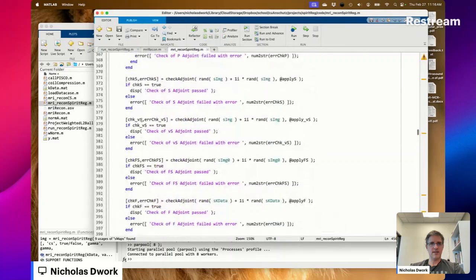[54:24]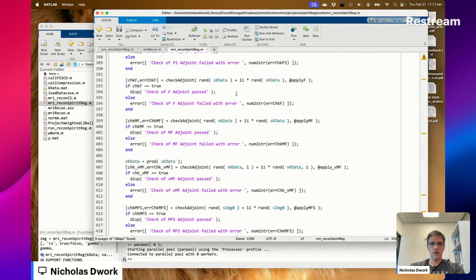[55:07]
W. Apply W minus I. All right. We'll just keep going. Apply W minus IFS. All right. And we've got a concat. Oh my goodness. Let's add a check. S image 0. Oh goodness. I didn't test any of the support stuff. All right, maybe that's for another stream.
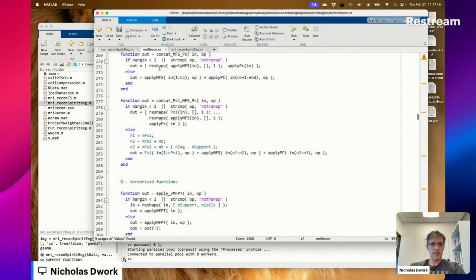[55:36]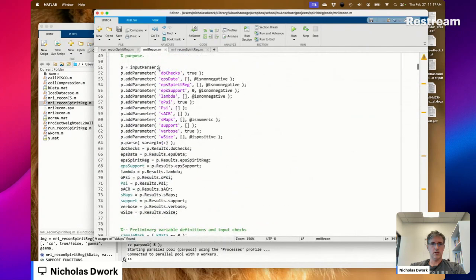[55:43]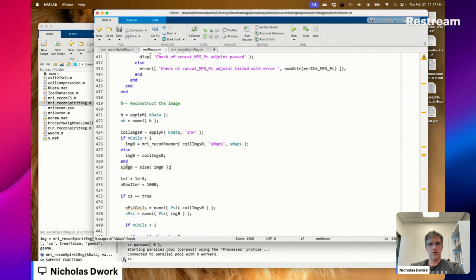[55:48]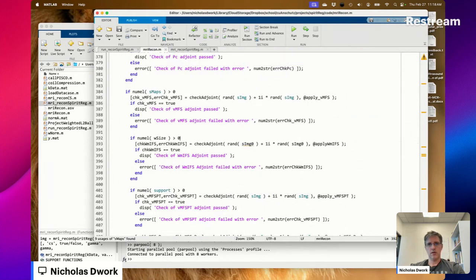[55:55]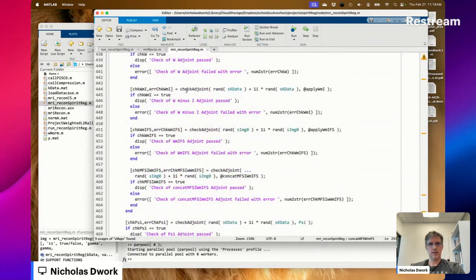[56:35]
Let's see if we could get this up and running. Okay. Variable might be unused. What are you talking about? I don't know. Okay. There was a concat somewhere. MFS, WMIFS, MFSI, WMIFS. Which one do I need? I guess we're about to find out. Okay. These are all the doChecks. Should I check WMI? Let's check WMI as well.
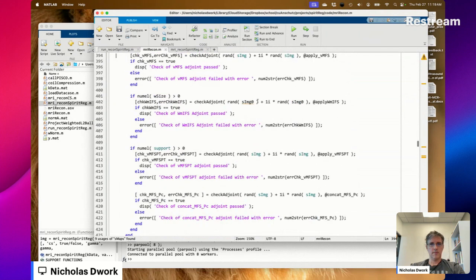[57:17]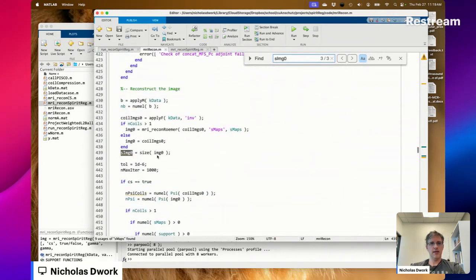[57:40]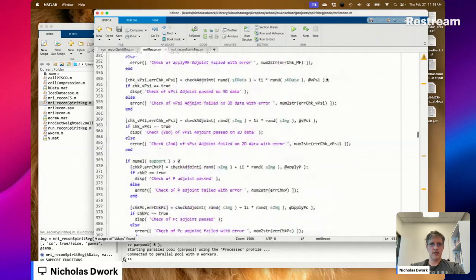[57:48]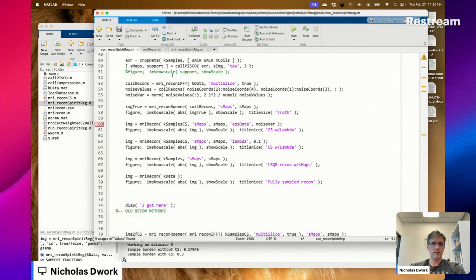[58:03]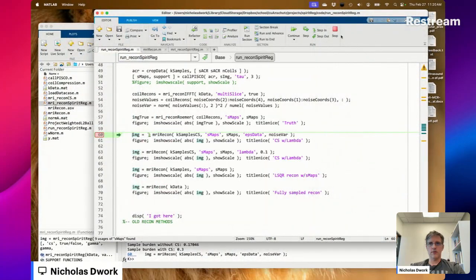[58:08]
Oh, you know what? I think you can do SPIRiT regularization without sensitivity maps. What does it say? Variable might be used before it's defined. Somewhat like, what? I'm so confused. This, okay. Okay. I see. Oh, of course. Okay.
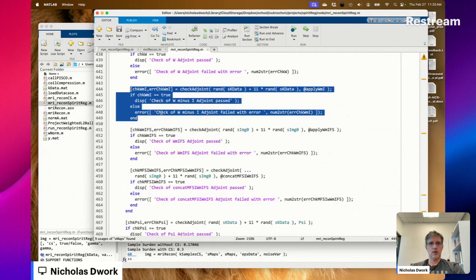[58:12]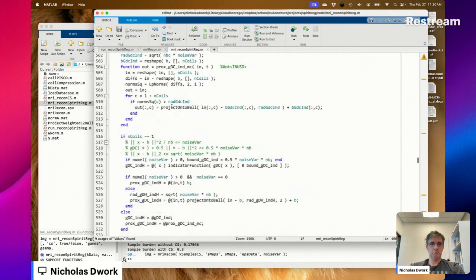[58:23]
Working on spirit regularization over here, people. Oh, so yeah, I mean, that actually ran. Nothing I added broke anything. It's a check, not much of one, but a check. Yeah, see, this is me trying to do it the other way. It should be an image minus 1. Oh, changing it in the wrong spot. Okay.
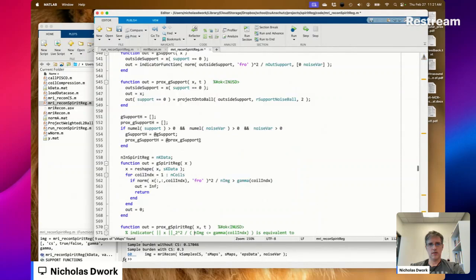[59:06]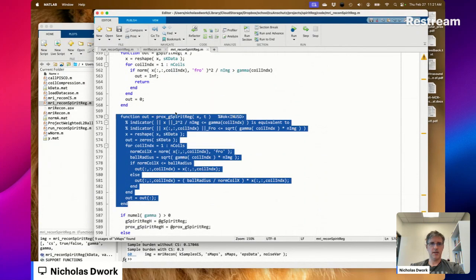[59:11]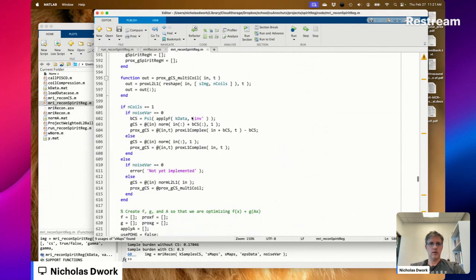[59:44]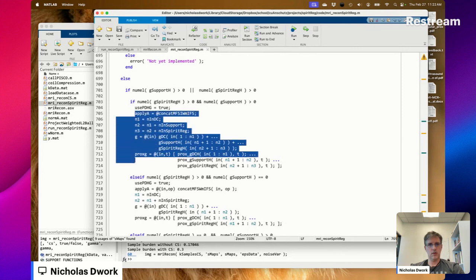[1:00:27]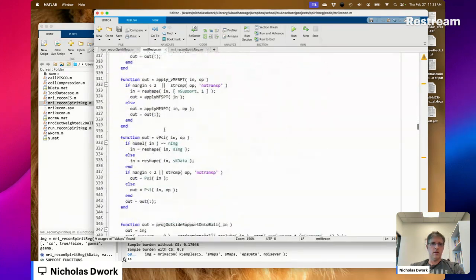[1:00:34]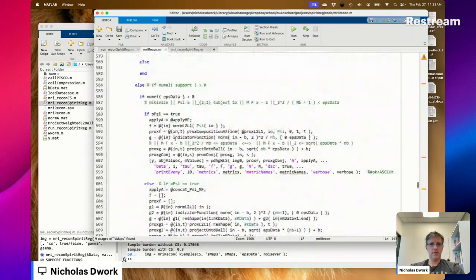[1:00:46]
Prox G spirit reg. Okay, this is going to be a lot simpler, because I'm just going to use project onto ball. Huh. That's interesting. We've come a long way since a comment like that, haven't we? Okay. Seems to be the sort of thing we're doing. All right. Do I have a W size anywhere in here? Doesn't look like that I do. Okay.
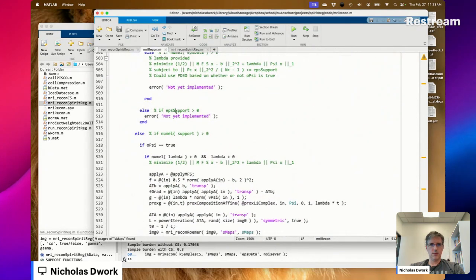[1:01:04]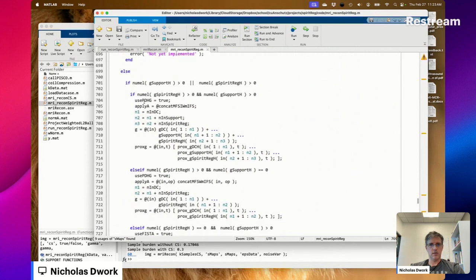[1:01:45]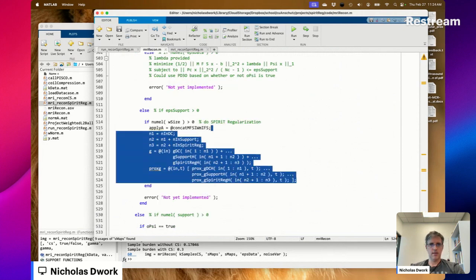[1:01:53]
Five, 1, 4. So where's the else? So we're going to do it here. If numel W size is greater than 0, do spirit regularization. Do I have a similar thing without the support? I guess this is it. So we're just going to get rid of that. MFS, WMIFS. So concat WMFS and WMIFS.
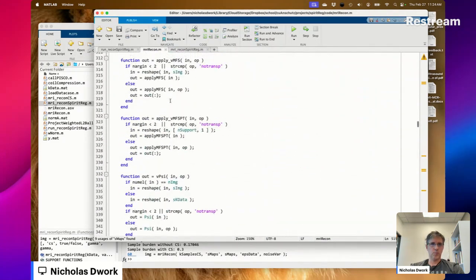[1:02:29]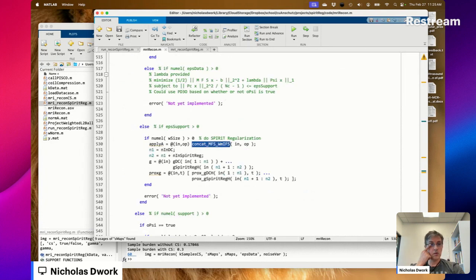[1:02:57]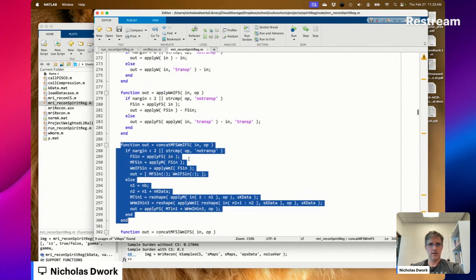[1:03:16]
Concat, where are you at? MFS, WMIFS. Okay. This is B. And in Spirit Reg. What on earth is that? NK data. NK data. Do I have? I guess I don't have an NK data.
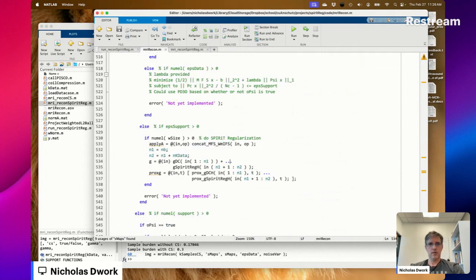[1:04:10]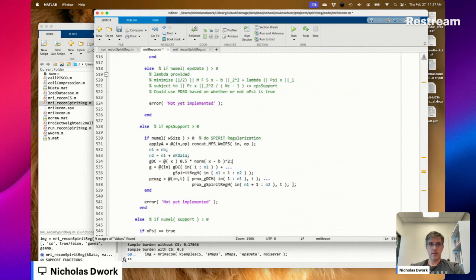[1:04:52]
GDC. So this one we have 0.5 times. I wish. What is GDC? This is when I thought I could do that thing where I just define functions and use the proximal operators, the gradients or whatever as they come along. Oh. Okay. So that's GDC.
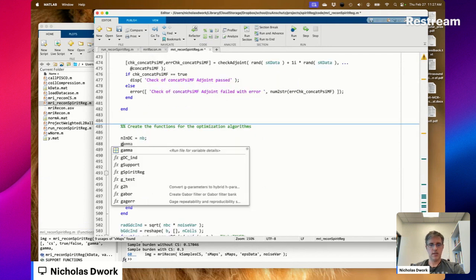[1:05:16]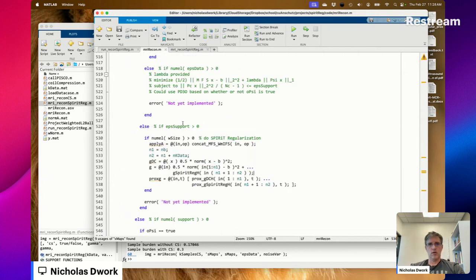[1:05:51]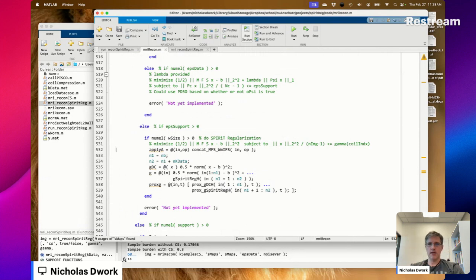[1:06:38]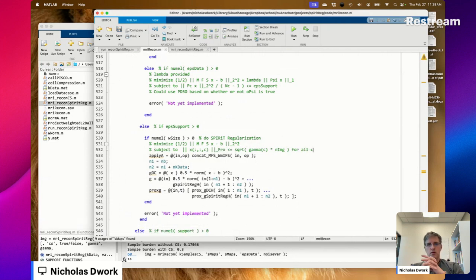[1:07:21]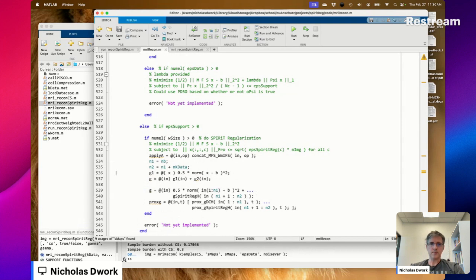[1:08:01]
It's going to be EPS Spirit Reg. Call this G1. G is equal to at in G1 of in plus G2 of in. I'm writing differently now than when I created Recon Spirit Reg. One, two, and one. And 1 plus 1 and 2. Should be G2.
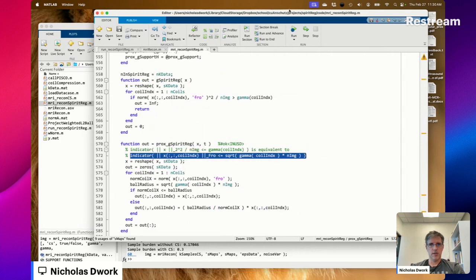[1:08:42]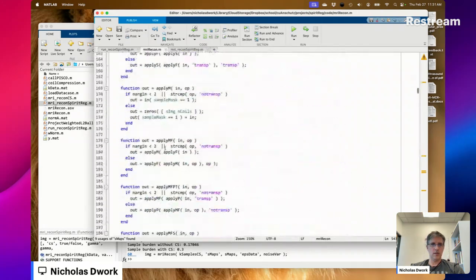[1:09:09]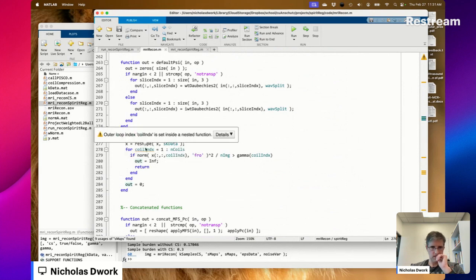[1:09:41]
There's a lot going on. I'm going to call this Spirit Reg, not G Spirit Reg. Why does that matter? This is because it's not being used. Why does that matter?
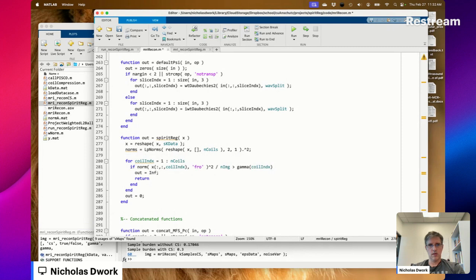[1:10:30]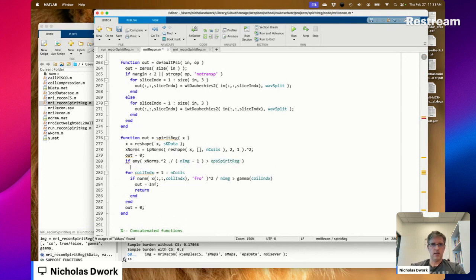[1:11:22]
Norms is equal to LP norms of X squared. So reshape X and coils to 1. out equals 0 if max norms, call it X norms, greater than... if any of X norms is greater than, divided by image minus 1, is greater than EPS spirit reg, out equals infinity. End. Think that works?
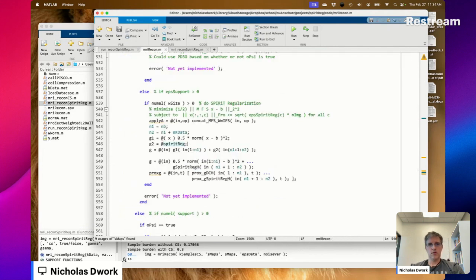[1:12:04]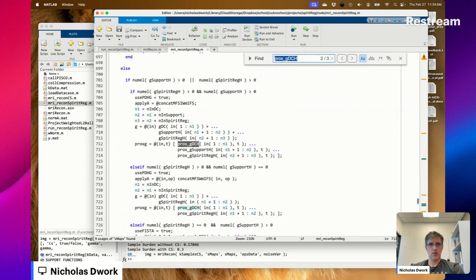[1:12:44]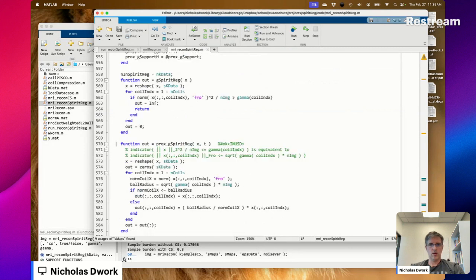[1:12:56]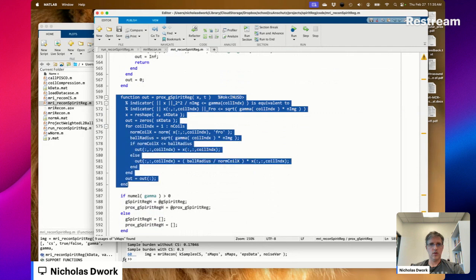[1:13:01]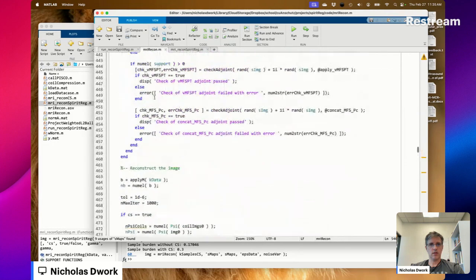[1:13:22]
G spirit, okay. Spirit reg. Good. Prox GDC. Prox G1 is equal to... what's prox spirit reg? This is doing a projection. I'm going to call this prox spirit reg. What is this doing?
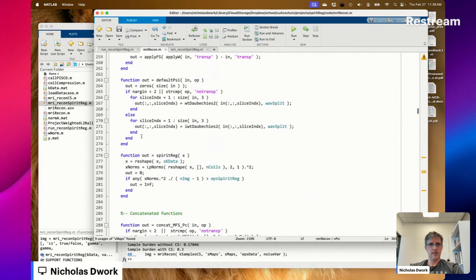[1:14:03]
Well, these are vectorized functions. What is project doing there? Put in the wrong spot. All right. Concatenating functions. Project should go here. Yep, okay, there we go. Spirit reg. Because this is a scalar, that doesn't need to be a point divided. Worried about the order of operations. I want to make sure this division happens before the comparison.
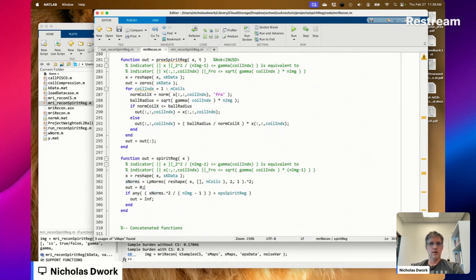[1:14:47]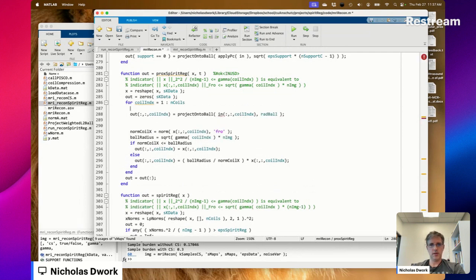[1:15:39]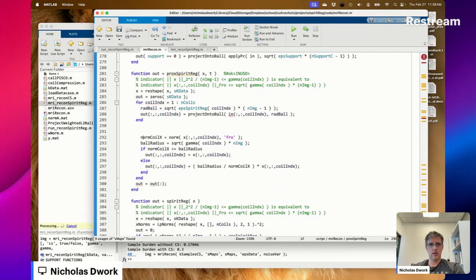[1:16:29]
Out equals zeros. So I would write this now as out coil index is equal to project onto a ball in coil index, rad ball, like that. And then what's the radius of the ball? Rad ball is equal to square root EPS spirit reg coil index times n image minus 1. Ooh. You want that as a column vector, do you? Call this in.
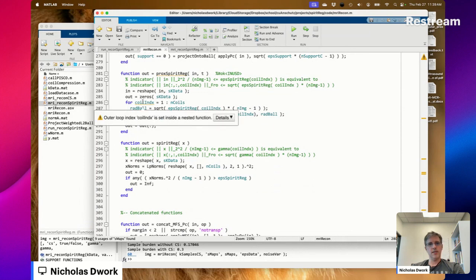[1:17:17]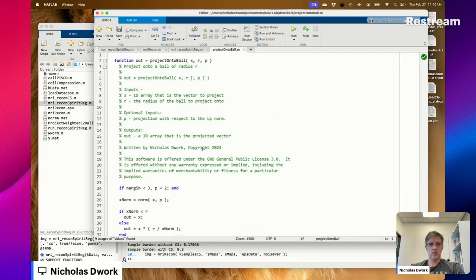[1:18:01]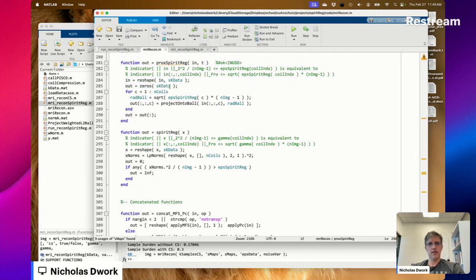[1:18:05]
Outer loop index, coil index is set inside a nested function. Oh, I see. Coil index is being used outside of this function, so you don't want to be changing it inside. Okay, that was the issue there. Yeah, I think I could vectorize this loop, but I am not going to. And that's where we are. Okay.
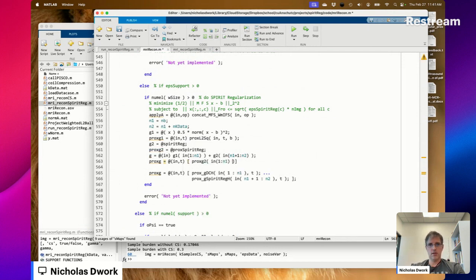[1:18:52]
Prox G1, okay. Prox G is equal to at in T reshape. Well, I don't know. What does Prox G1 do? L2 squared shrinks it. I think it's going to be fine. Oh, it should have been Prox G1. G2 in from N1 plus 1 to N2. Okay, PDHG, line search.
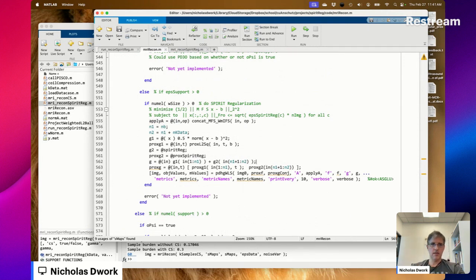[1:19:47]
F is empty. It's one of those. Trick 1. This is interesting. Does G have a simple, oh, it only does, wait, does G have a simple proximal operator? I think it does. I don't mean G, I mean this. Does the indicator function for that have a simple proximal operator? The answer is yes, it does.
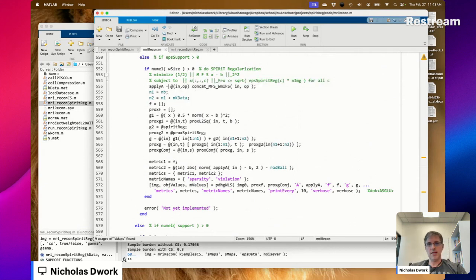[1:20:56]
What does apply A? W minus I? Oh, what is this W minus I business? W minus I FS. It's like this evaluated for the sth coil. Okay? So we have MFS and WMIFS. Okay, so now it's much tougher. Now this thing, the indicator function for this thing, does not have a simple proximal operator, and we're back to this. Great.
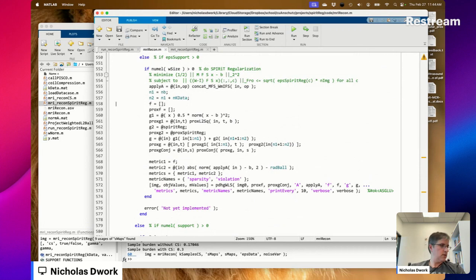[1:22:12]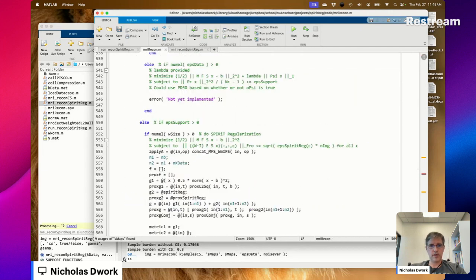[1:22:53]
Almost time to call it a day. Let's see if we could just get to the point where we're actually running this thing. Metric 1, the objective. We'll just call it G1. We don't even need that. And what about the violation? WMIFS. WMIFS in.
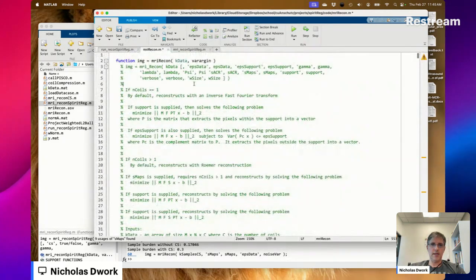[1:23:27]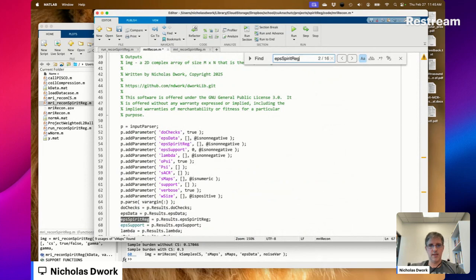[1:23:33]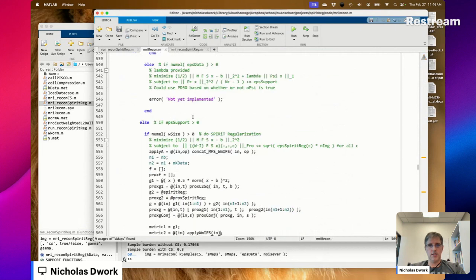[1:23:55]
See, the thing is, since I did this for each coil independently, this gets much tougher. Is EPS Spirit Reg a scalar? No, it's not. Okay. So then I think I need to make this metric up here. Function O equals metric spirit reg violation in, for C equals 1 to n coils, and IFS in, if norm.
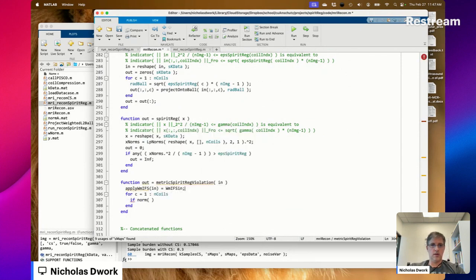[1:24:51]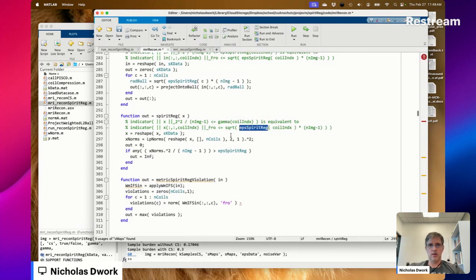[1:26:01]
Out equal, okay, so out equals max violations equals zeros coils 1. And if the norm... I did this wrong. Minus square root EPS spirit reg times n image minus 1. Rad ball spirit reg is equal to
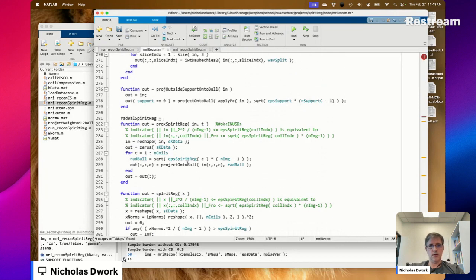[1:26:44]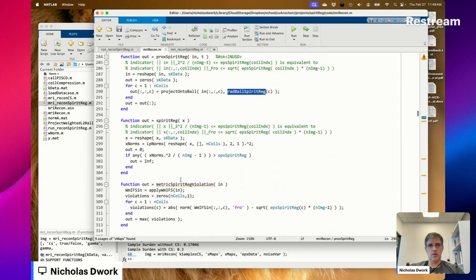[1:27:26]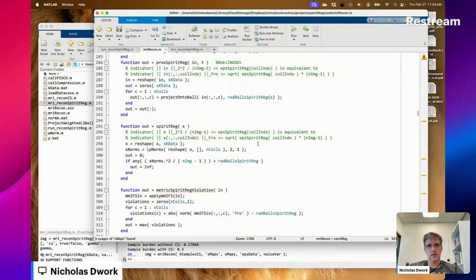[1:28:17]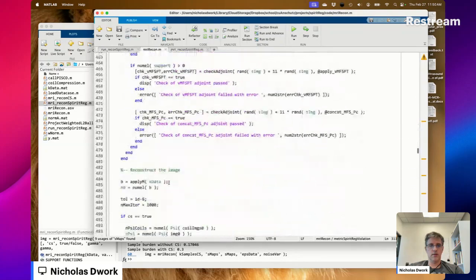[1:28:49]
if num w size greater than 0... should call this rad balls. Rad balls. Okay. Radius of the balls of spirit regularization. Metric spirit regularization. So now I can do the same thing here, minus that. I don't have to keep replicating the code. Okay. Metric 2 is equal to matrix is equal to that.
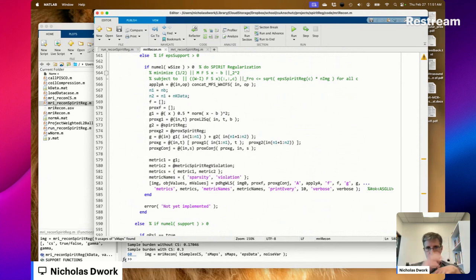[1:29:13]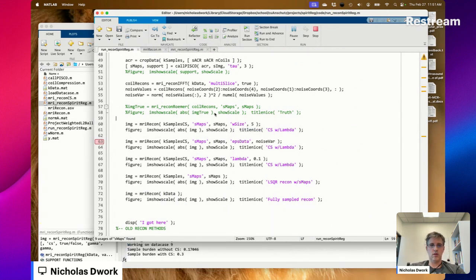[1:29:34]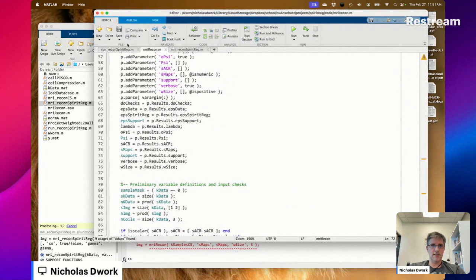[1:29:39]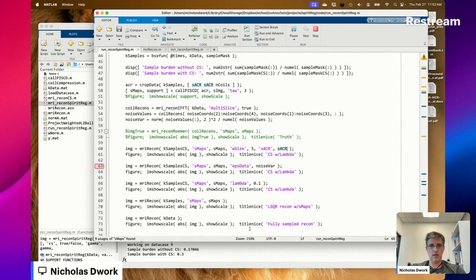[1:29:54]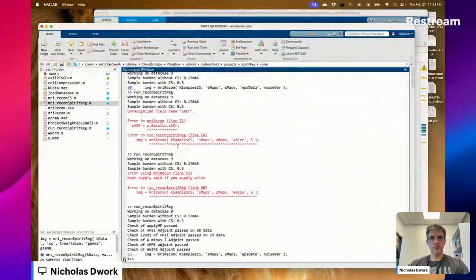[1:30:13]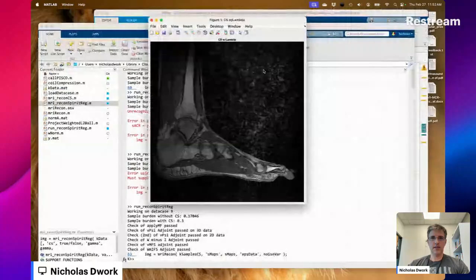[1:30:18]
Does this have any chance of working? I would say no. I would say no. Let's see where it breaks. Oh. ACR. That's an easy fix. Still going. Let's supply SACR if you supply W size. Okay. Let's do that. Huh. Got past the checks. What? The title is wrong. And this looks bad, but it ran.
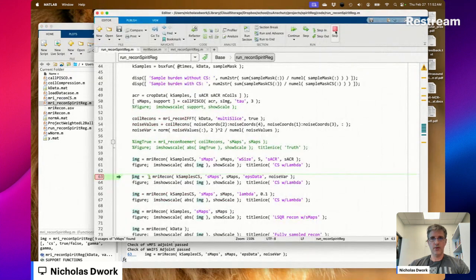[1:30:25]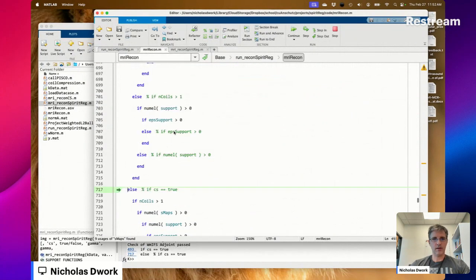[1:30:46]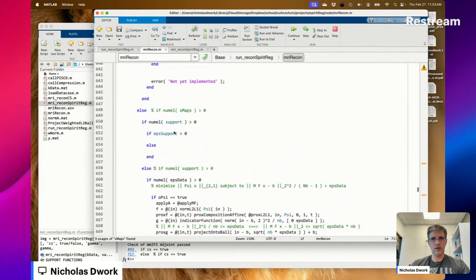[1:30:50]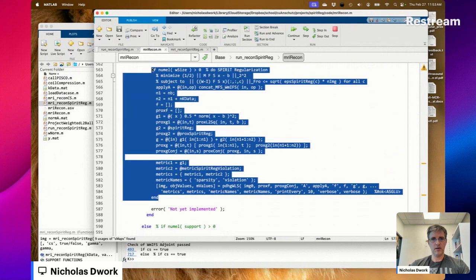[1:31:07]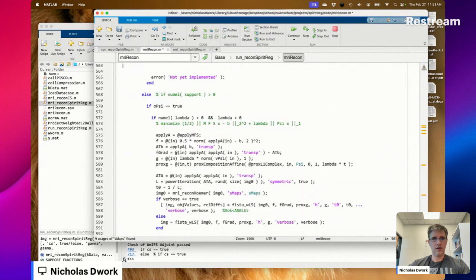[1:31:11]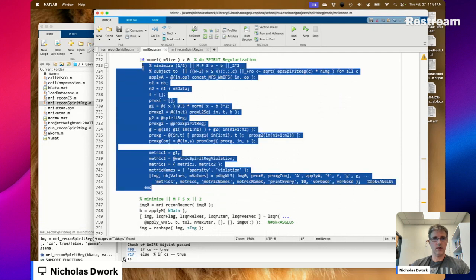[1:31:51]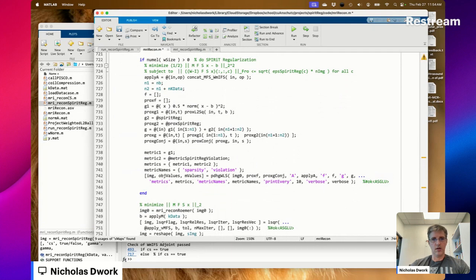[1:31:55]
However, I'm getting the feeling it didn't do what I wanted it to do, actually. Let's see what it did. That looks a lot like a least squares answer to me. Oh, we're going to skip past all these checks. This is in the wrong spot, because this is all for if compressed sensing. And right now I'm just implementing spirit regularization without anything else. So if coils, if ends, if support no. So here, if num W size is greater than 0, otherwise, else, okay.
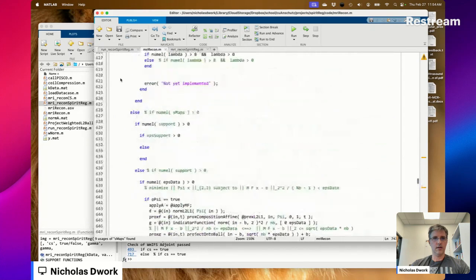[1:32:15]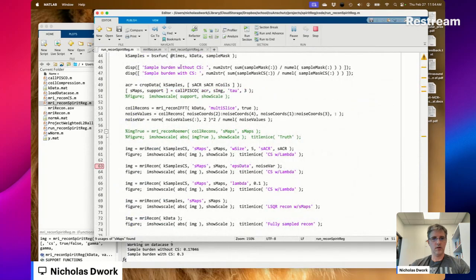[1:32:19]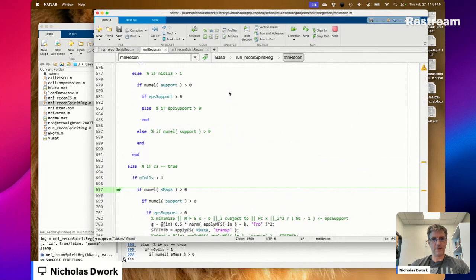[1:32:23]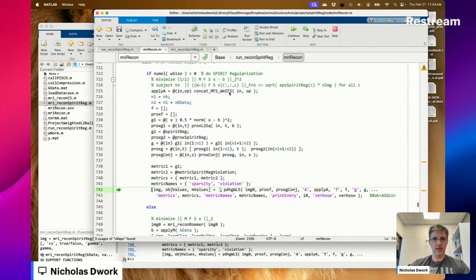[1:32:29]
All right, we're here and we crashed. Incompatible sizes, G1. Huh, MFS. MFS definitely outputs B and B.
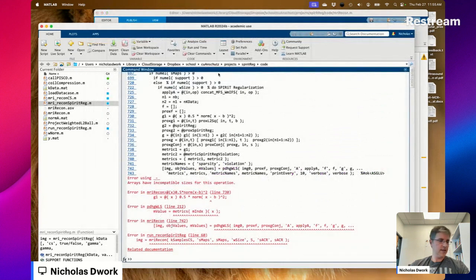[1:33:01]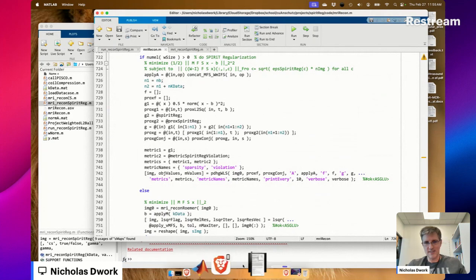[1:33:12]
Stuck. And it's time to go. Well, that's where we'll pick up when we leave off, when we pick up again. I don't know. All right, everyone. I'll see you guys later.